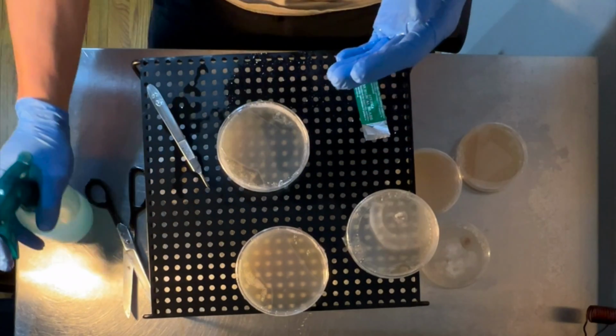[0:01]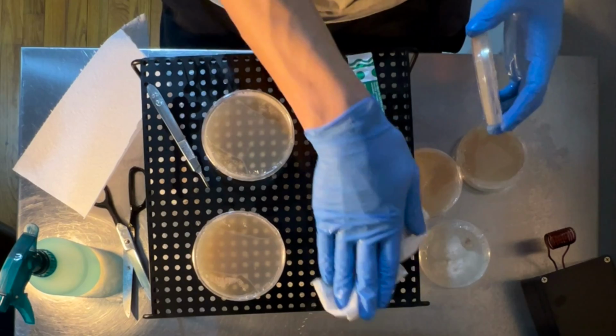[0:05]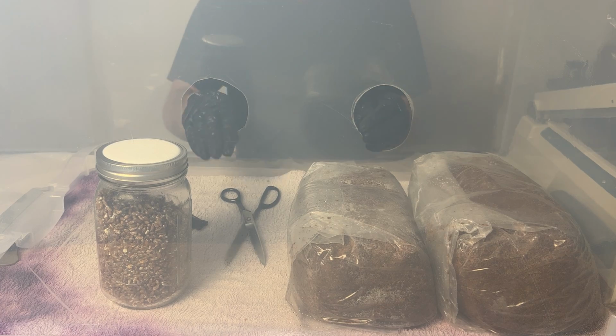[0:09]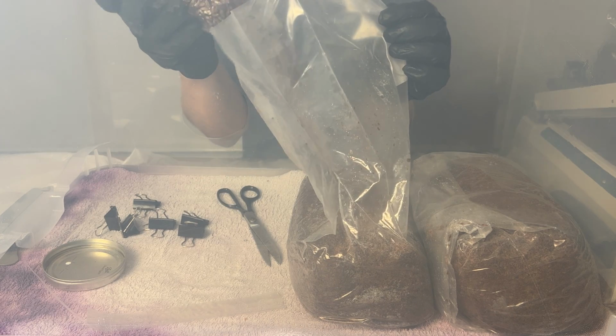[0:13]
One of the biggest challenges in mycology is maintaining a sterile working environment, which is essential to eliminate contamination that could outcompete your mushroom mycelium. Starting out, most people, including myself, use a still air box. This is an effective budget option, and you can accomplish a lot with it.
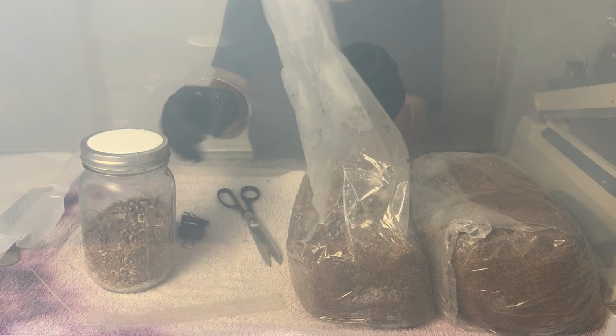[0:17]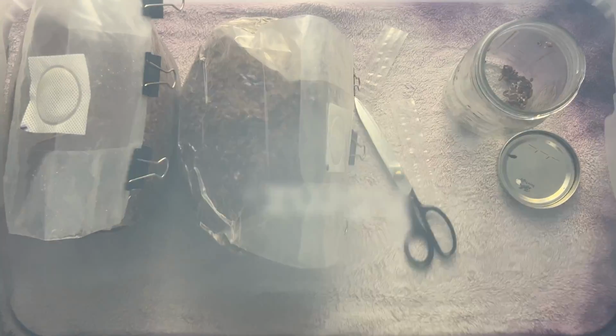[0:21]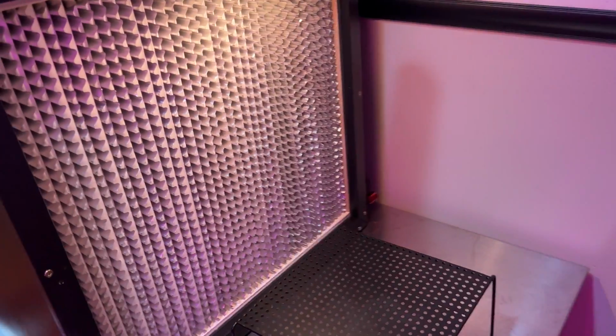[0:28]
But as you progress, it often becomes tedious to set up and use properly, and presents difficulties when working with fruiting blocks and other larger items. Laminar flow hoods, on the other hand, provide a sterile workspace that's much easier to use and can virtually eliminate the possibility of contamination when used properly.
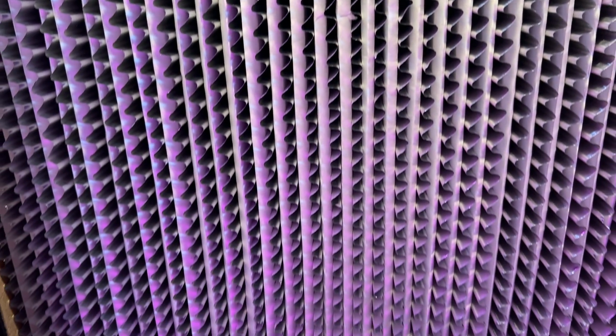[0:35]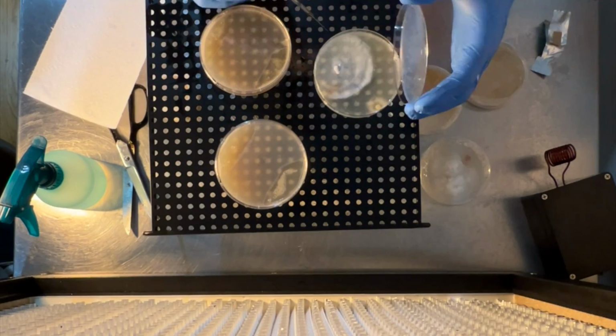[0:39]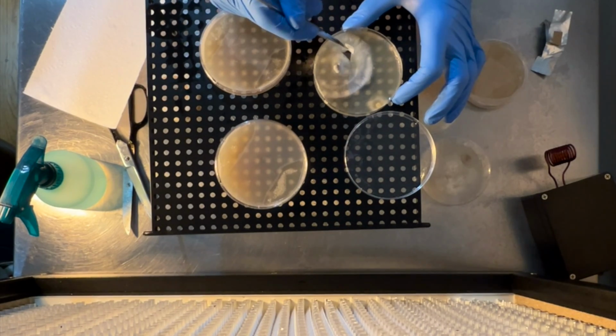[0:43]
A flow hood is basically just a box with a filter built into the front and a fan that blows air into the box and out the filter. When the air is pushed through the filter at just the right speed, it will produce an area of non-turbulent, or laminar, flow in front of the hood. This ensures that no stray particles get swept into your workspace, keeping your work clean.
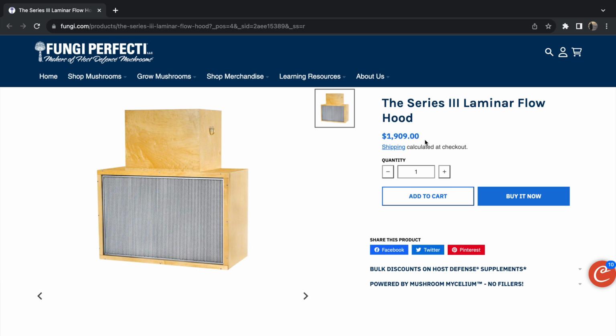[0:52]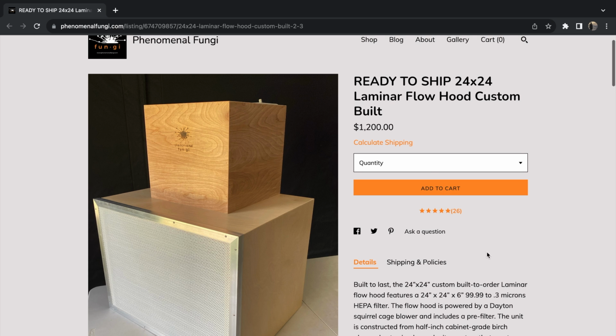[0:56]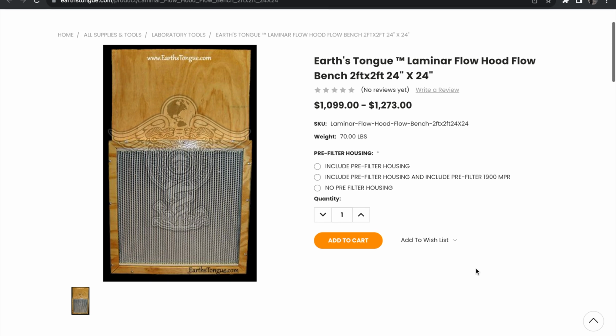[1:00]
The problem is that commercially available flow hoods almost always come with huge price tags, and the ones that are big enough to do anything more than agar work with are often inaccessible to most mushroom growers.
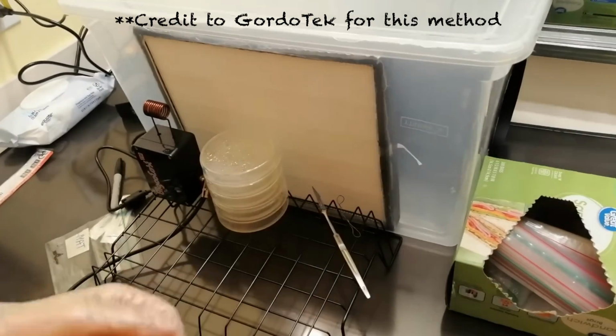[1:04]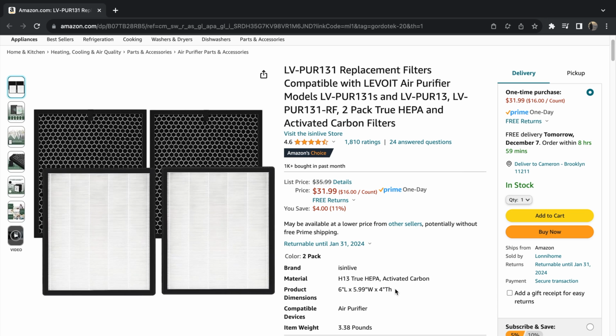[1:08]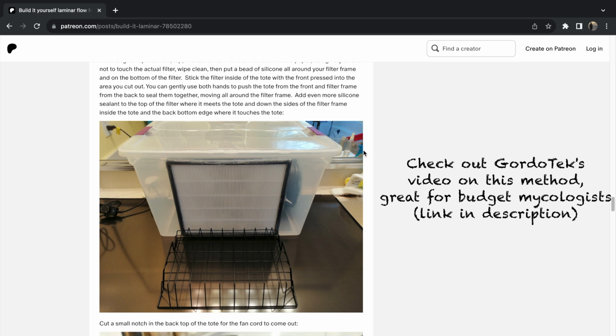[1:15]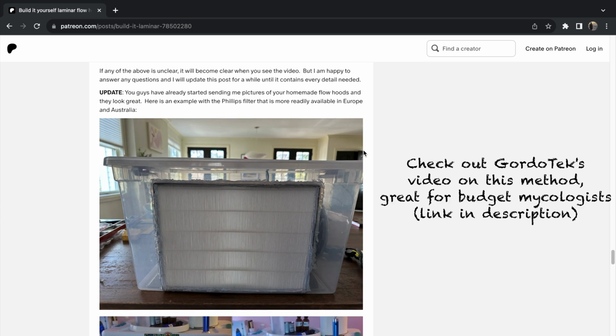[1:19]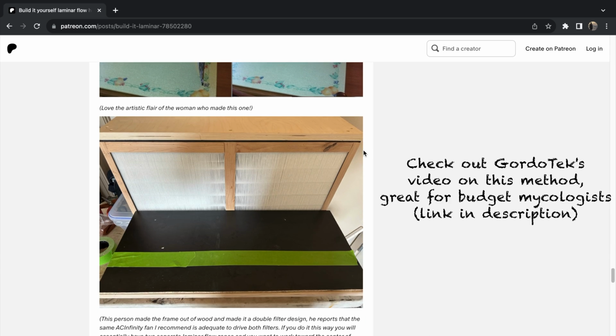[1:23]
It's possible to make a functional flow hood on a tight budget using a plastic tote and a HEPA filter made for an air purifier, but I found that the air filters available to make this option were too small for the size flow hood that I wanted to build, and also wouldn't provide true laminar flow. That being said, true laminar flow isn't strictly necessary for mycology work, just a stream of clean air, so if you're on a tight budget and are okay with a smaller flow hood, this option can work for you.
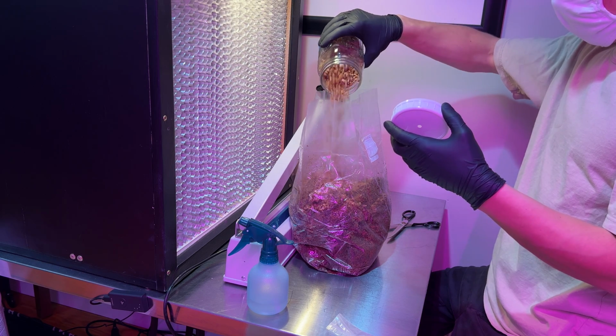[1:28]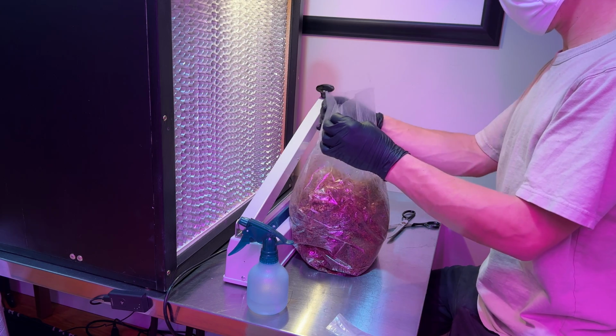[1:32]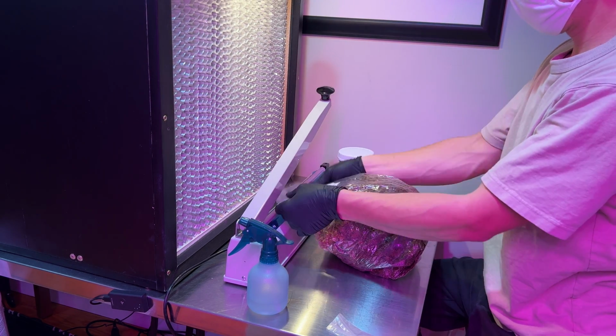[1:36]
If you're looking to work with larger bags and tubs though, it's beneficial to have a larger flow hood that can provide laminar flow. In this video, I'll explain how to design a flow hood from the ground up, including component selection and other considerations, as well as giving you an overview of the build process.
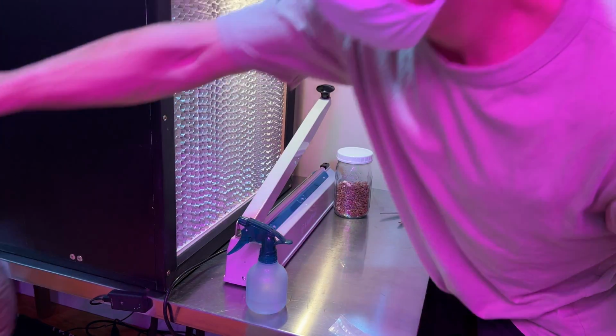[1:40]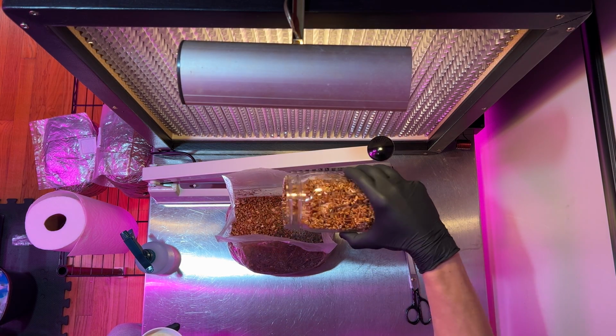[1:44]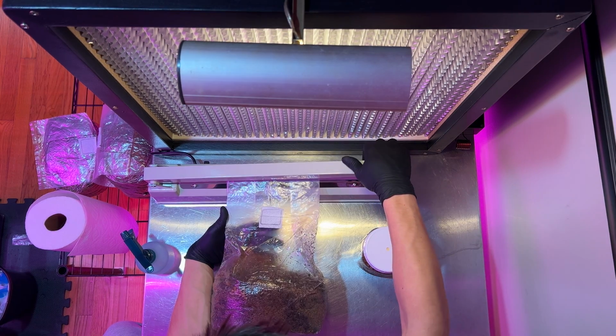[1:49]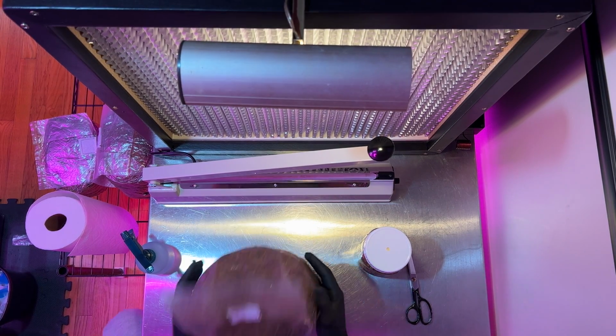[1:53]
My goal is to create a high quality flow hood without sacrificing any performance, so this is by no means a budget option. The cost for this one came to just over $600, which is not cheap by any means, but much more manageable than the $1,000 plus options available for purchase.
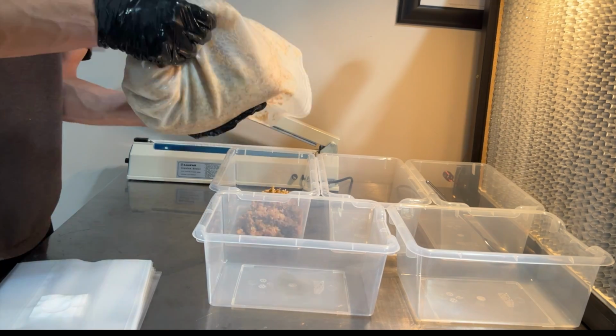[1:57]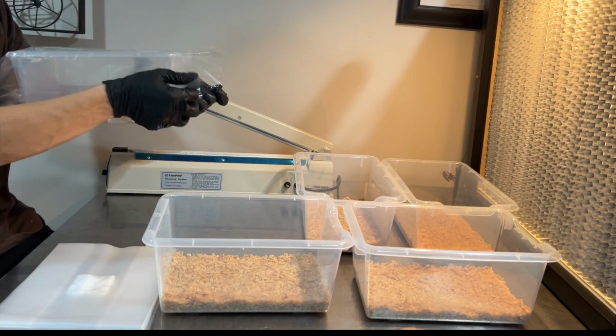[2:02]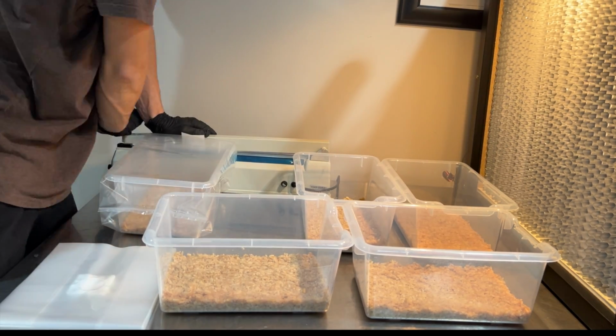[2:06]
Building a flow hood requires a lot of prep work and careful component and material selection to ensure proper operation. So let's start by going over the materials I used. I'll explain how I chose each component throughout the video, so stay tuned for that.
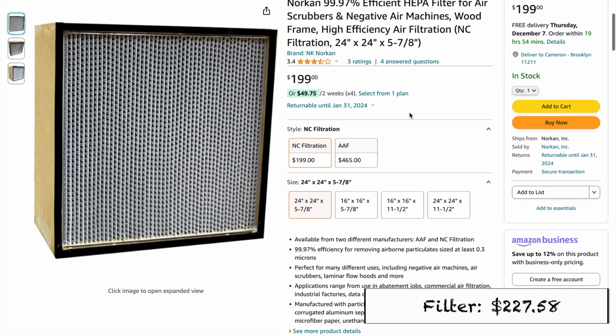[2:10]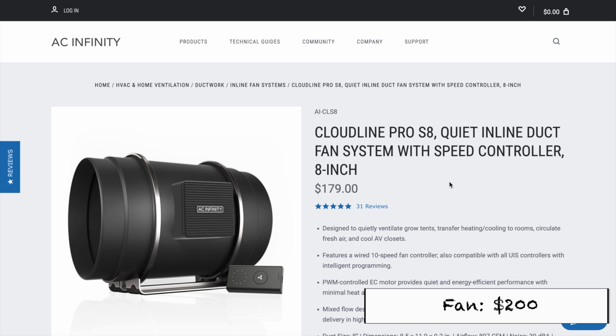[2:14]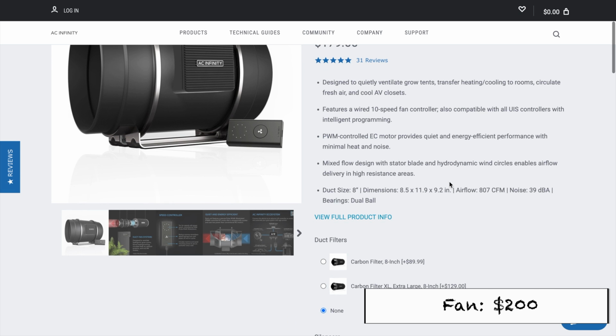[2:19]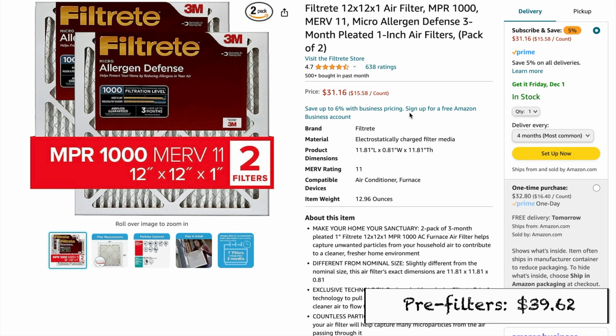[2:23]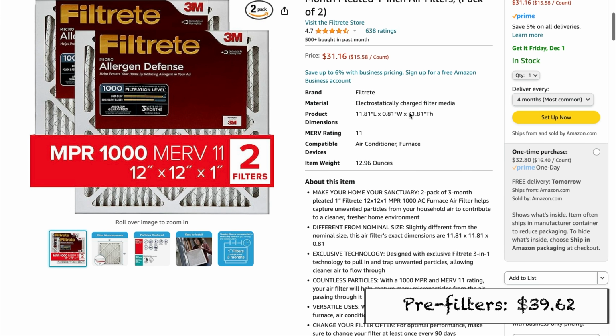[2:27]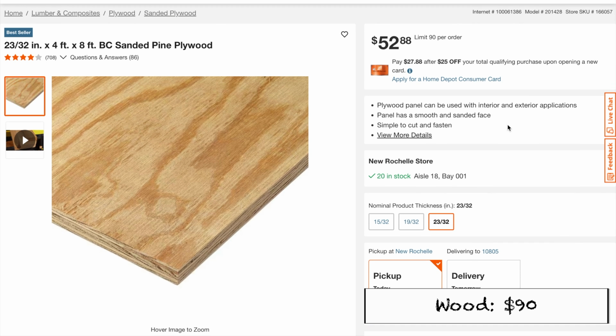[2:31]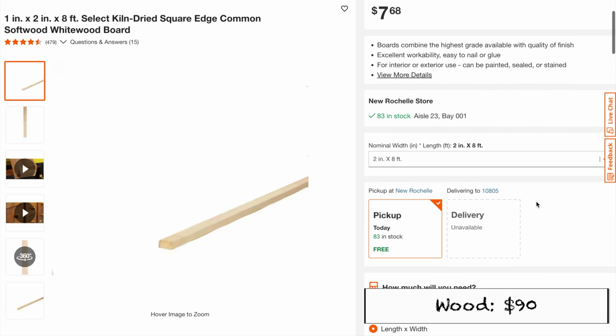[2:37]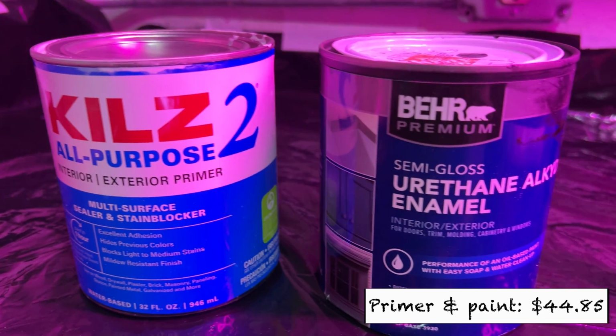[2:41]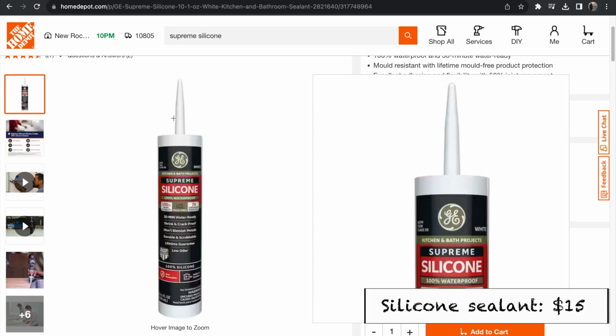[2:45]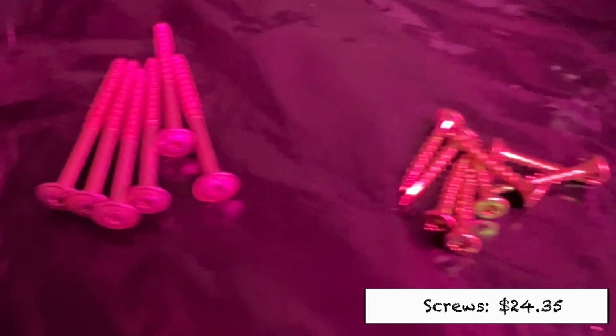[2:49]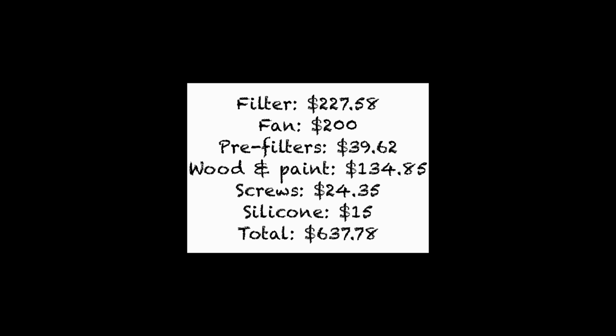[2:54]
To construct the box that houses the filter and fan, I purchased a 4x8 foot sheet of 23/32 of an inch sanded pine plywood, as well as 3 1x2 inch pine furring strips. While I was at the hardware store, I also picked up some wood primer and gloss paint, some silicone sealant to seal any cracks in the box, 2 inch cabinetry screws to fasten the plywood together, and 1 1/4 inch screws to attach the furring strips. This brought the total for materials to $637.78, which includes an extra pre-filter.
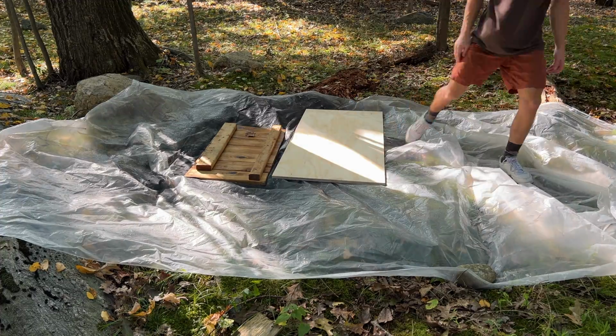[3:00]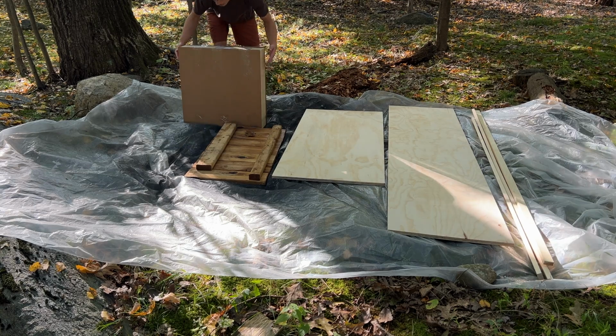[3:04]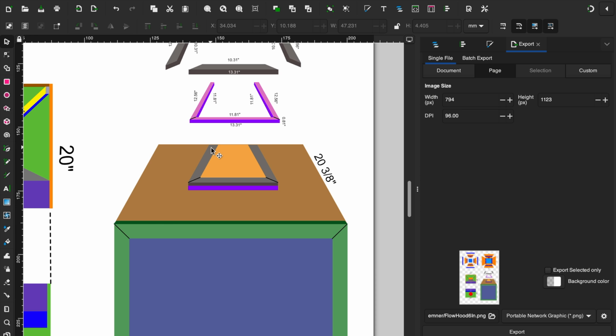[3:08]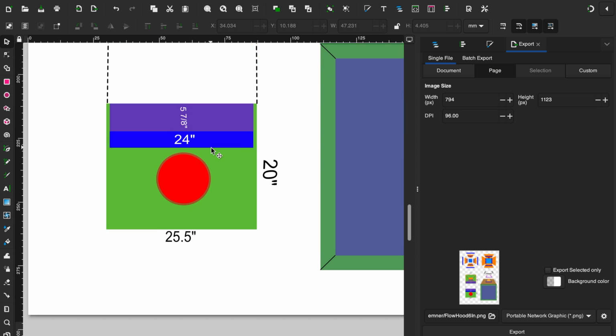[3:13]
So with the materials secured, let's roll the construction footage while I talk about how I landed on each component. I'm not going to go into too much detail about the nitty-gritty construction because it will vary based on the design you choose, but if you're interested, I'll have the detailed plans I made for this project in the description, which you can use as a reference for your build.
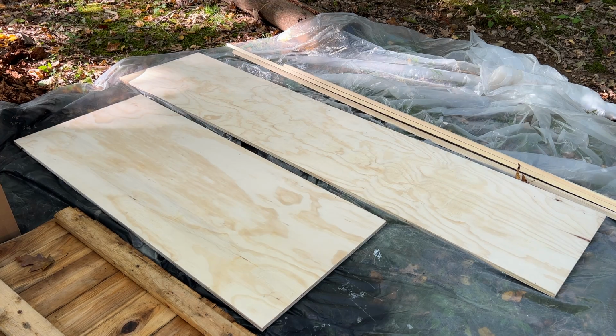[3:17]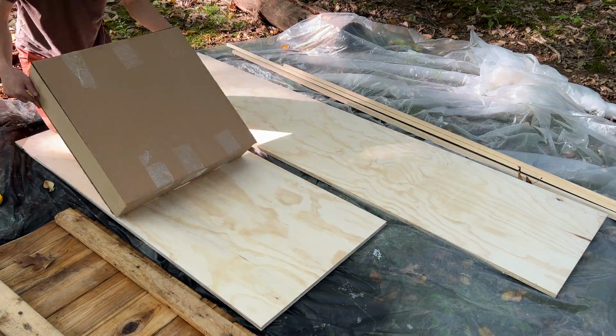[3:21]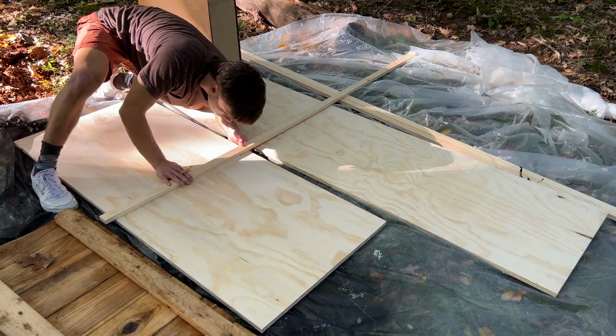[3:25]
I'm starting out by cutting my plywood and furring strips to size. All these pieces are designed to snugly fit my 2x2 foot filter, so your measurements will vary based on the filter size you choose.
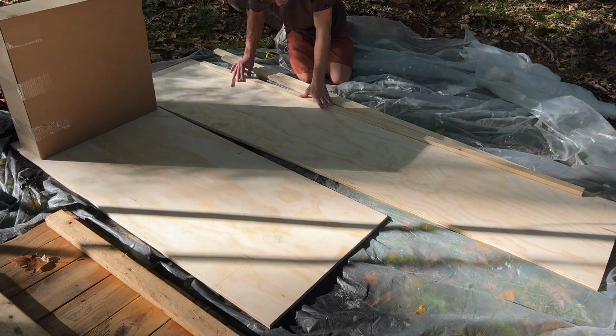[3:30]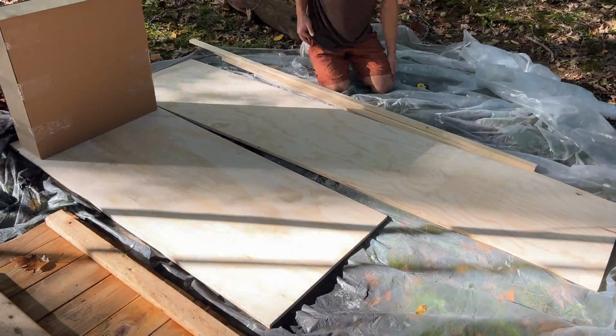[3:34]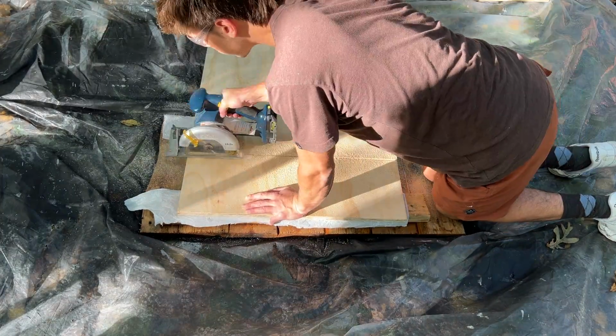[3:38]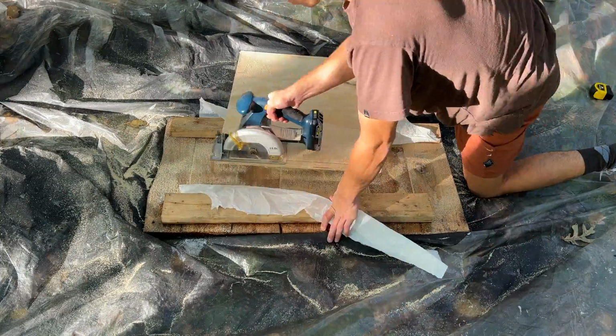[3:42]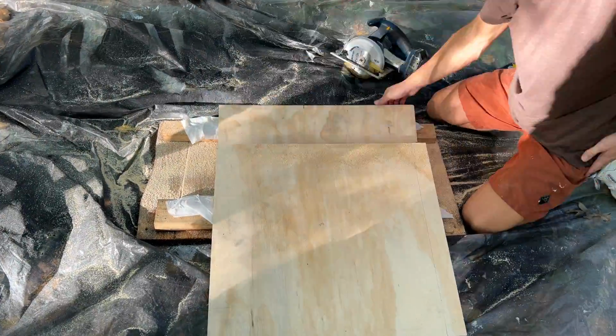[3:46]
If you're going to go through the effort of building a flow hood this way, I'd recommend making it at least 2 feet by 2 feet, as this is big enough to do most mycology work, including making fruiting blocks and larger mono tubs. 2x4 foot is another common option, and would provide an even bigger working area, but will require a more powerful fan and cost more. 2x2 ended up being perfect for my application, and also offered cost and space savings over the 2x4 foot build.
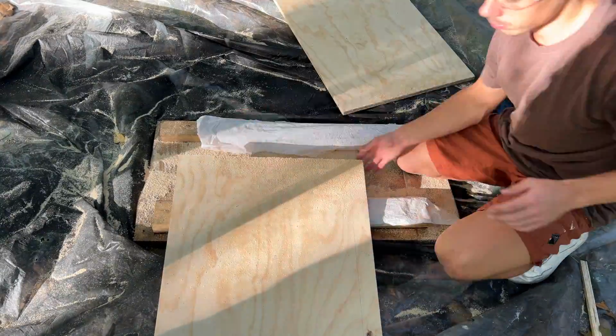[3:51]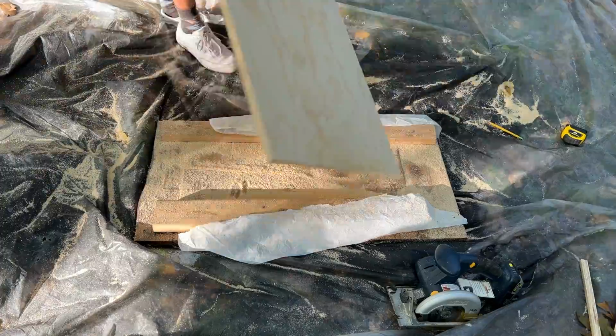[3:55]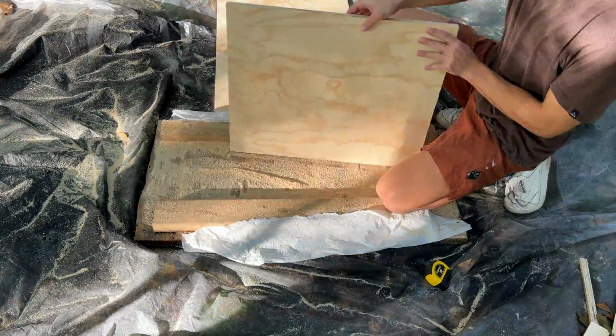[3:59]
In order for the flow hood to operate correctly, you need to ensure that the HEPA filter and fan are compatible. We need the air coming out of the filter to be moving at 100 feet per minute in order to achieve laminar flow, and making this happen requires a bit of due diligence.
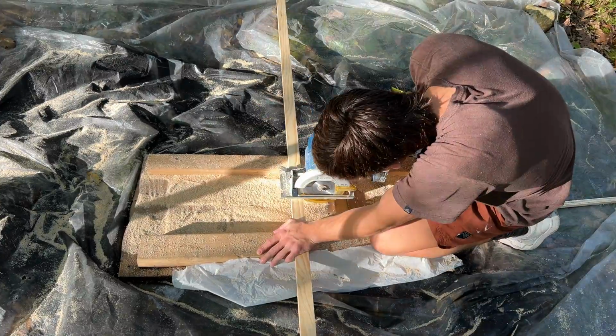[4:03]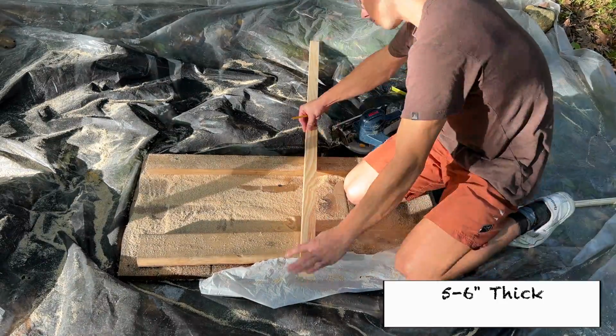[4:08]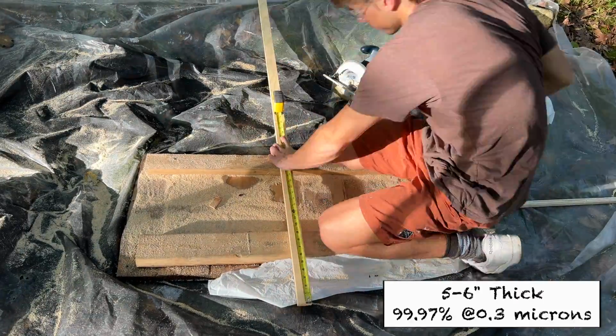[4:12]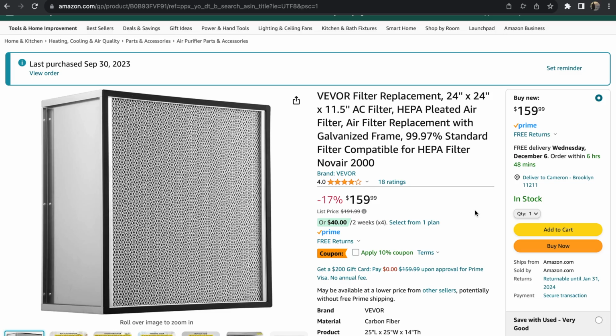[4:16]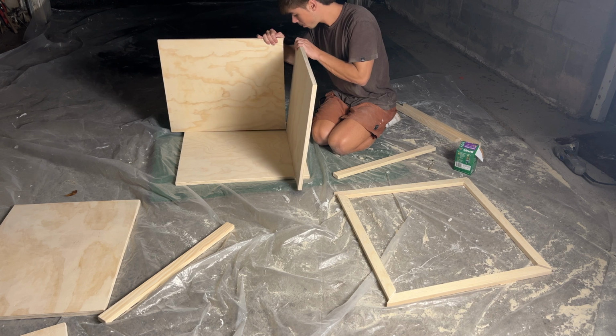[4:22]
The HEPA filter is the first thing you'll want to purchase. I'd recommend choosing one that is 5 to 6 inches thick and has a filtration efficiency of at least 99.97% down to 0.3 microns. You'll likely come across filters that are 11 inches thick, and while these can work, they're designed to scrub the air in industrial settings and aren't as good at producing laminar flow in these kinds of flow hoods.
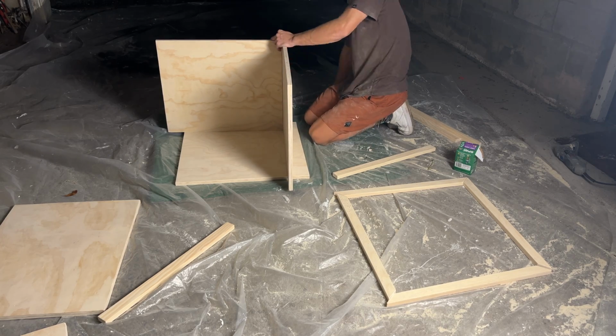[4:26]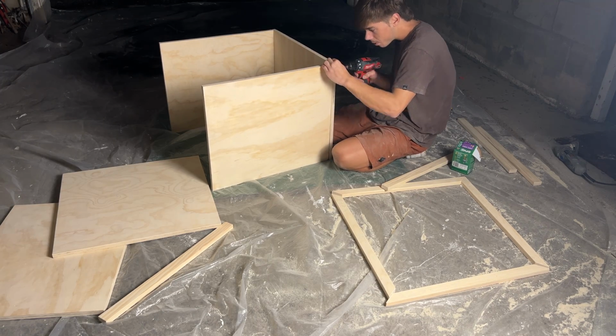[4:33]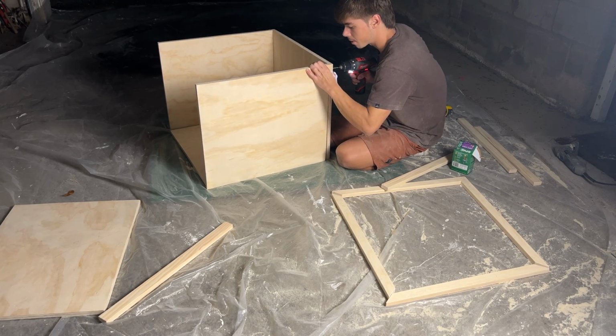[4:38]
Next, you'll want to look at fans, and the main thing here is that it needs to be able to put out the correct airflow through your filter. Because air filters have resistance as the air passes through them, the pressure inside your flow hood will be greater than the ambient room pressure. Since the fan will need to work harder to blow air into the pressurized interior of the hood, we need to account for this pressure drop when choosing which one to get.
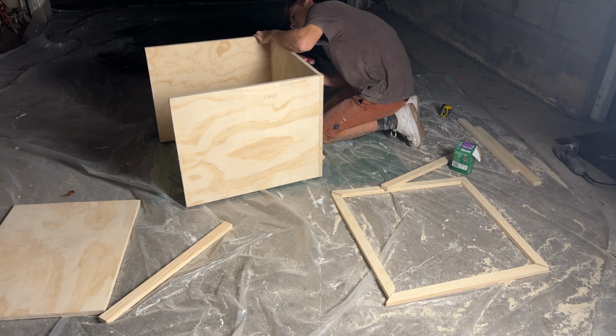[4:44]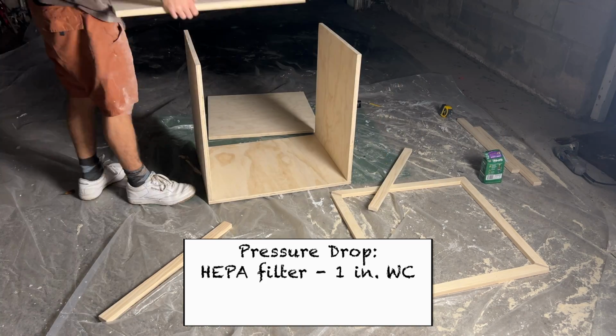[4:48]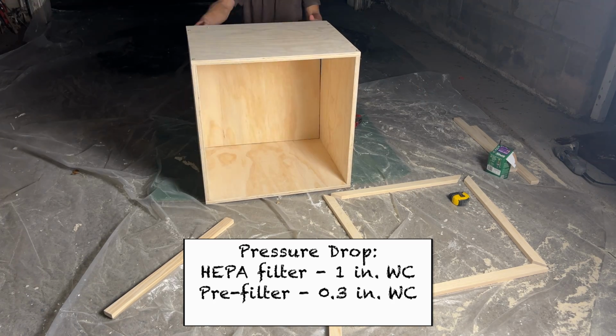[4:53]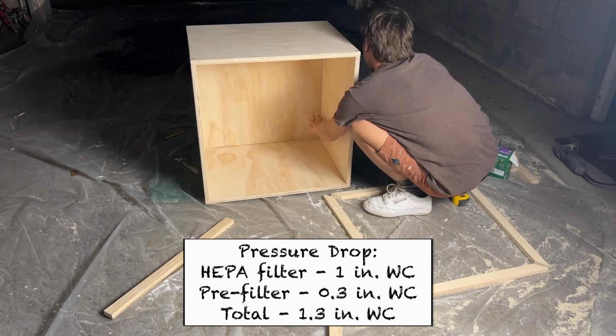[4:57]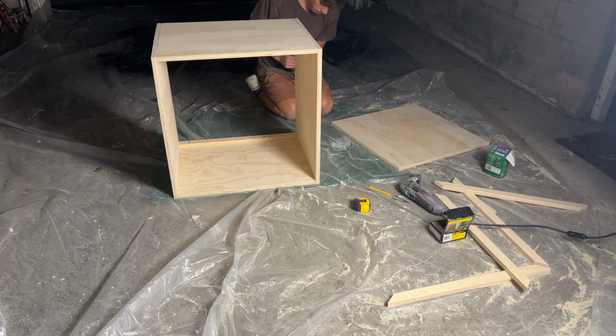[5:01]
Most filters specify the pressure drop on the packaging, but if yours doesn't, this type of 6-inch HEPA filter usually sits at around 1 inch of water. I'm also going to add another 0.2 to 0.3 inches of water to my calculation for the total pressure drop of the flow hood to account for the pre-filter. All in, the HEPA and pre-filter will produce a pressure drop of around 1.3 inches of water.
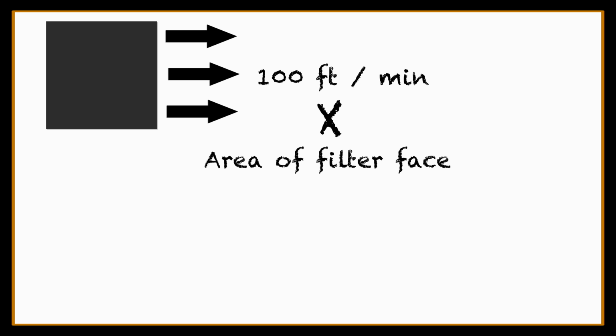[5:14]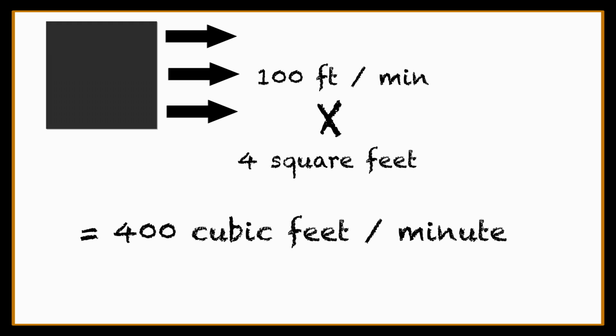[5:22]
This is a conservative estimate, and if you're using similar components, going off this number will probably work for you too. To calculate the airflow rate that our fan has to be able to maintain at 1.3 inches of water, we simply take the desired 100 feet per minute and multiply it by the area of our HEPA filter. My 2 foot by 2 foot filter is 4 square feet, so we simply multiply 100 feet per minute by 4 square feet to get our required airflow of 400 cubic feet per minute. Armed with this knowledge, we can start looking at fans.
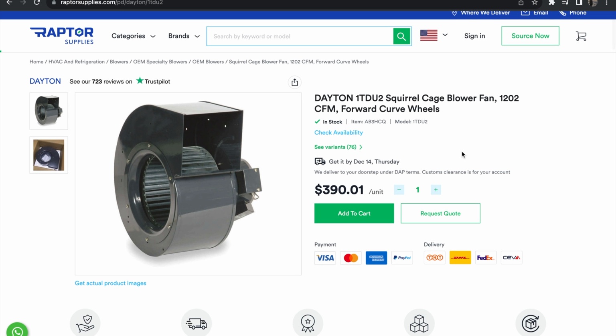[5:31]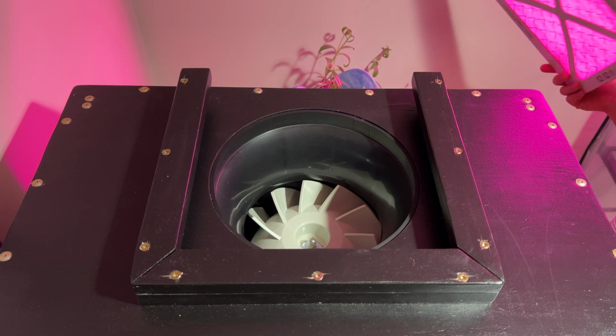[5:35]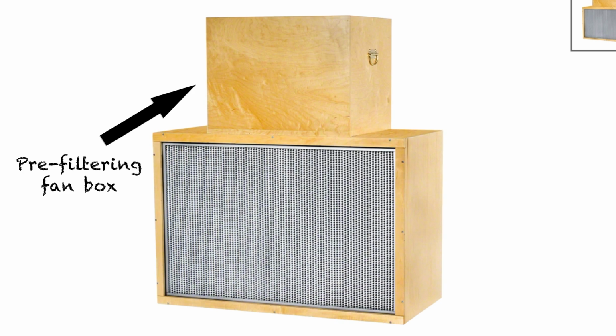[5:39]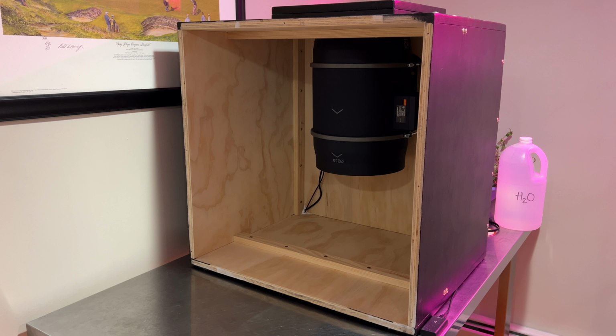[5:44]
A lot of people use blower fans for this purpose, but in this build I'm going to be using an inline fan. This allows me to house the fan inside of the flow hood itself, saving space and eliminating the need for a fan box, which is generally constructed around blower style fans to allow for pre-filtering. One thing to keep in mind when using an inline fan is that the plenum, or empty space in the flow hood behind the filter, must be made big enough to allow for an even distribution of pressure across the face of the filter.
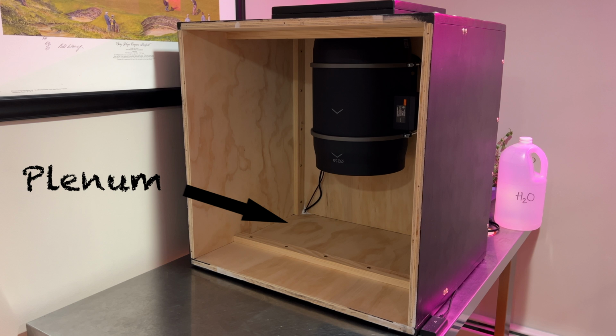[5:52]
The easiest way to determine if a fan is powerful enough is to use its fan curve. This is a graph that shows the airflow that the fan can produce at different pressures, which makes it very easy to see if we can move enough CFM at your pressure. Here, for example, we find our pressure on the y-axis, and then we go across until we meet the curve and see that this fan can make around 200 CFM at 1.3 inches of water. Since this is less than the airflow we need, we know that this fan wouldn't work.
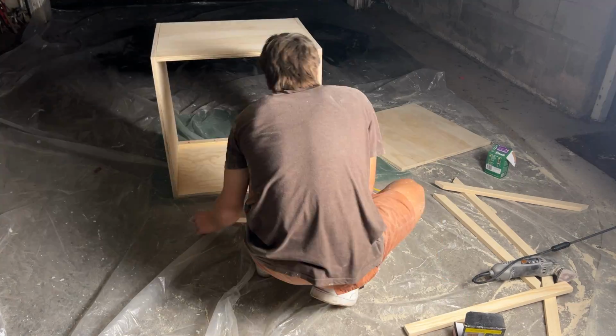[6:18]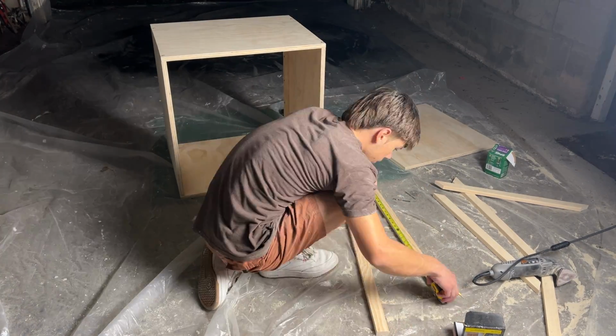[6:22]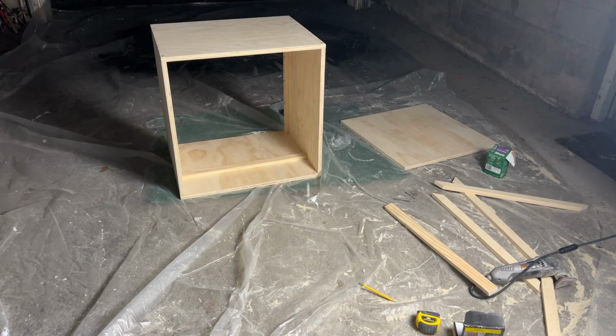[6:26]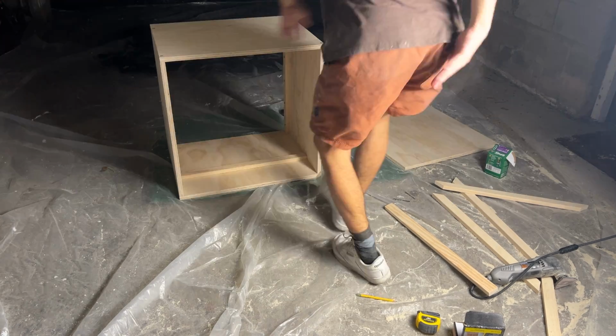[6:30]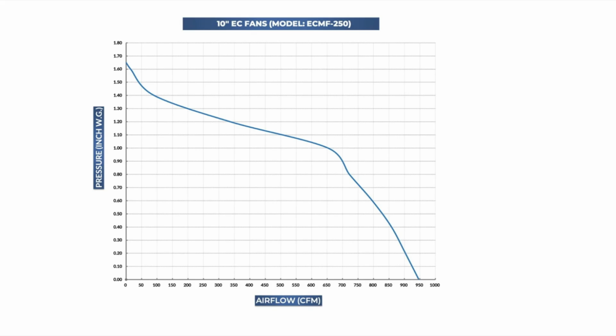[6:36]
Most inline fans that I looked at didn't come with a fan curve, so I had to do some deduction to see if they'd work. What they will usually disclose is the maximum CFM and the static pressure. The max CFM is the maximum airflow that the fan can produce under no pressure, and the static pressure is the pressure at which the airflow of the fan goes to zero. Conveniently, these values are equivalent to the two endpoints on a fan curve, and by comparing them to fan curves of similar fans, we can get a reasonable estimate of whether the fan will work.
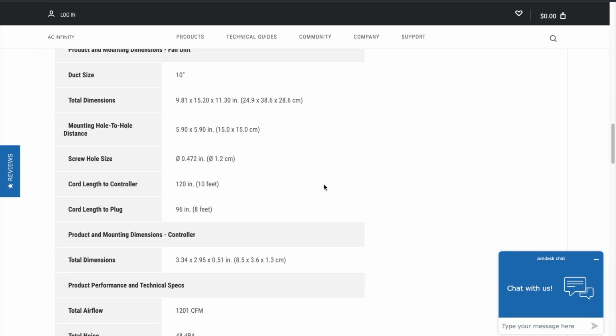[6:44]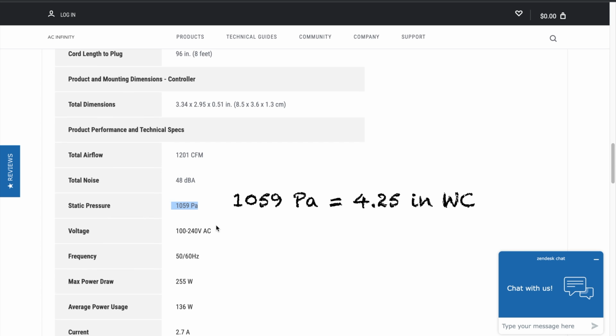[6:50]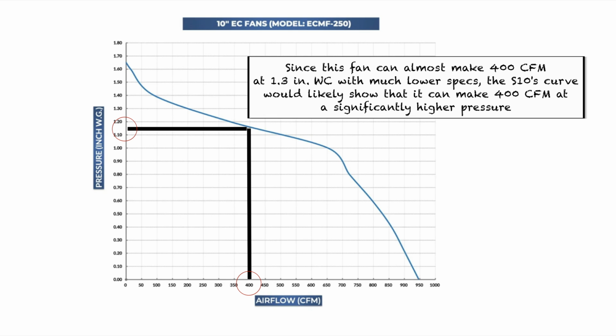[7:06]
My Cloudline S10 fan has a max airflow of 1201 CFM and a static pressure of 4.25 inches of water. Going back to our sample fan curve, which is for a similar inline style fan, we can see that if we go to our required 400 CFM, we meet the curve at around 1.1 inches of water. Considering that this curve is for a fan with a static pressure of 1.65 inches of water and a max airflow of 950 CFM, we can safely assume that the S10 would be able to far exceed the 400 CFM we need at 1.3 inches of water, given its specs.
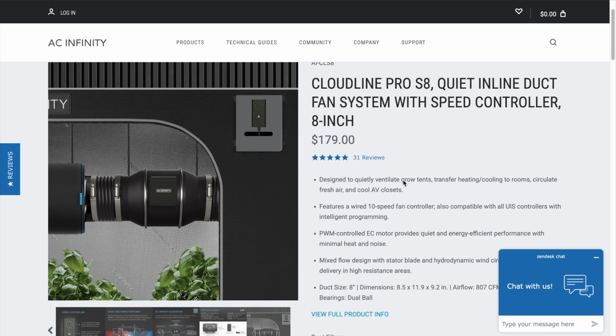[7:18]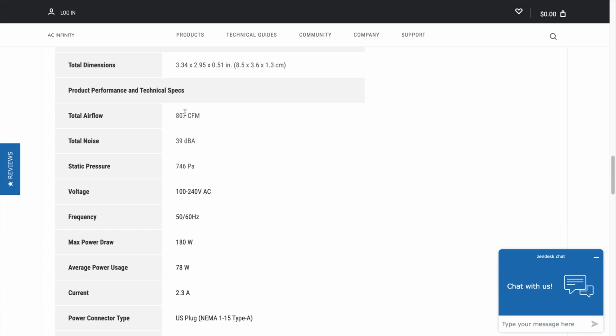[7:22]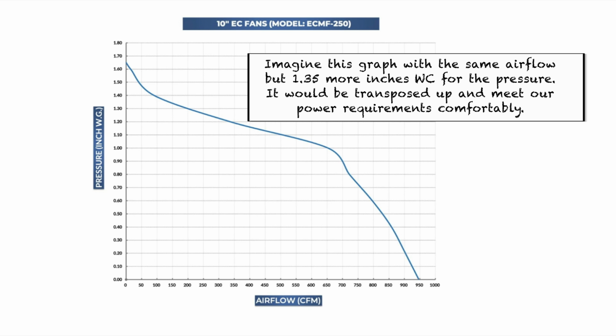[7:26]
This fan is probably overkill for this build, and I only got it because I found it for cheaper than the S8 model, which I would have gotten otherwise. The S8 has a max airflow of 807 CFM and a static pressure of 3 inches of water. And given its much higher static pressure and comparable max airflow to our sample fan curve, it would also be able to comfortably make 400 CFM at 1.3 inches of water.
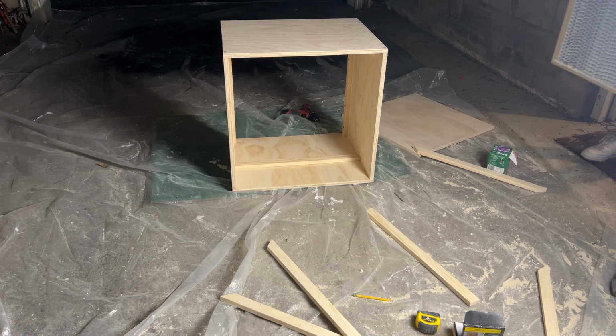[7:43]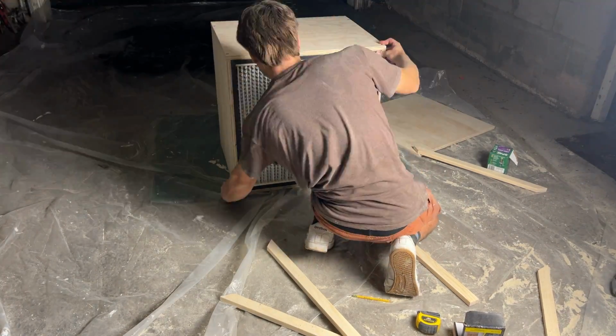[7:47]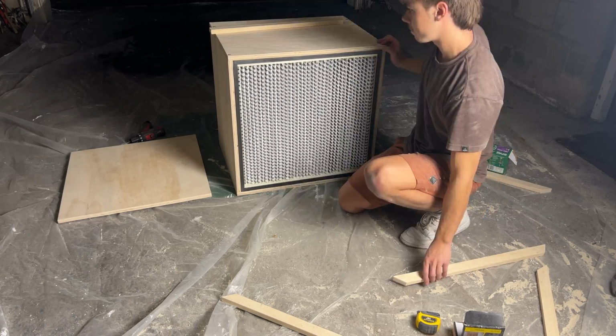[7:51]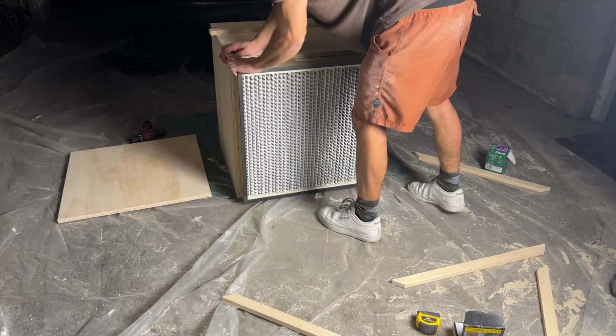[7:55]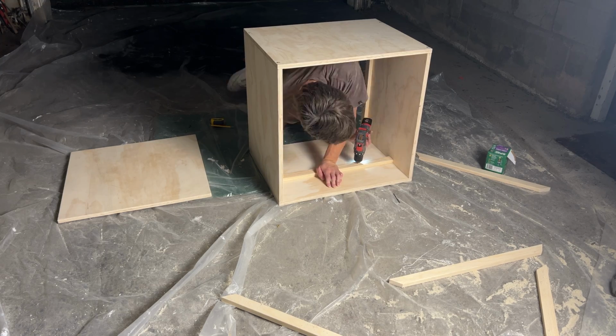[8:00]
This isn't a perfect way to determine fan compatibility, since fan curves don't necessarily transpose as simply as this, but I think it's good enough to get a rough idea of whether a fan will work or not. Because these inline fans are variable speed, which I consider a requirement for flow hood fans, we have some leeway in the power calculations and don't have to worry if we overshoot our required power. Another reason to get a variable speed fan is that the static pressure of a flow hood tends to increase over time as particles collect in the HEPA filter, and you may need to increase the speed setting on the fan over time to account for this.
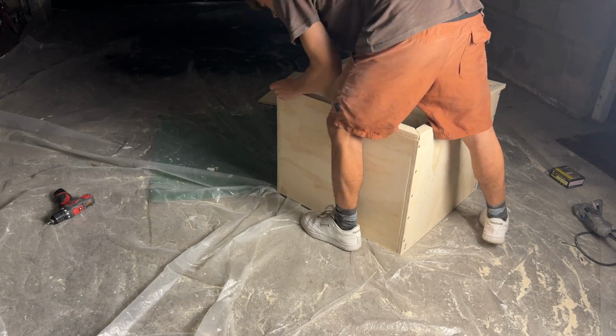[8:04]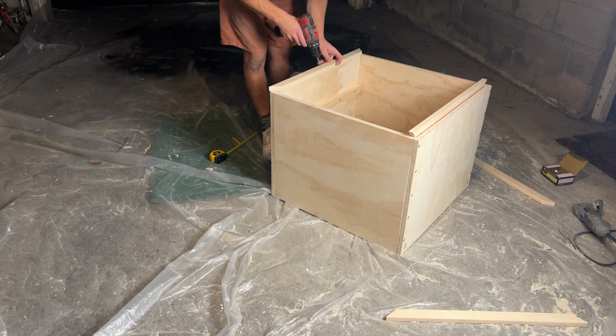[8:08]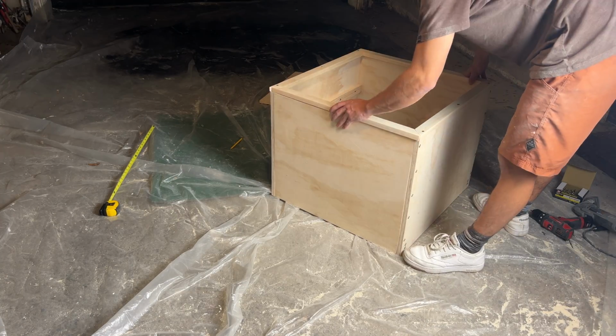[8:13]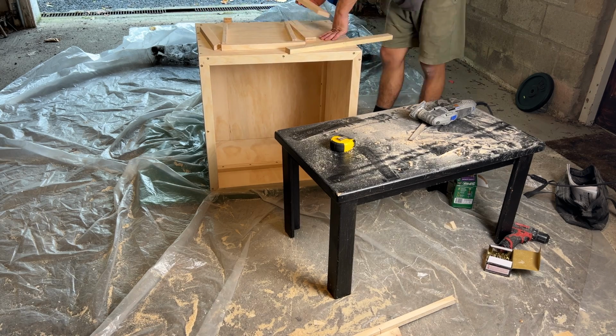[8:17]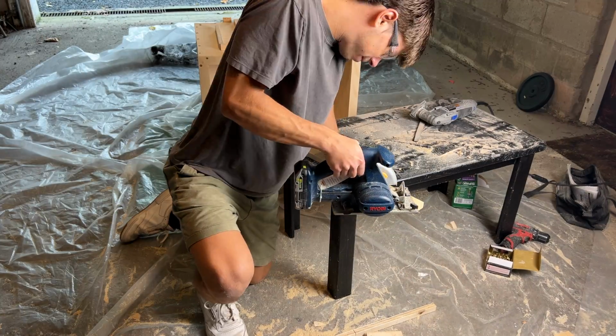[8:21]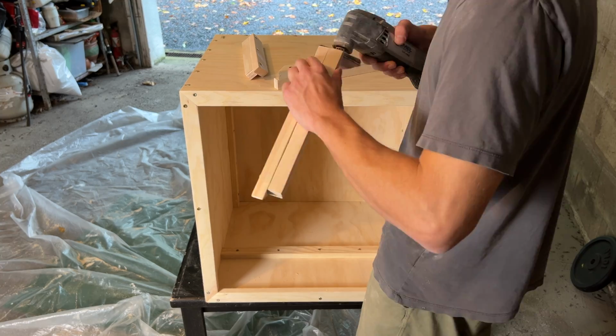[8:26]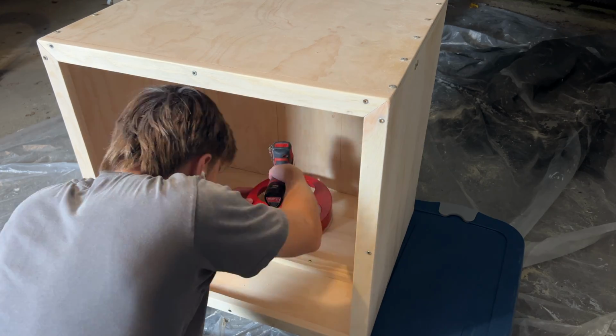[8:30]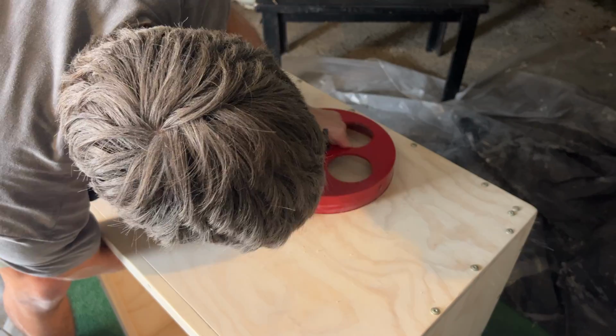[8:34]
I settled on 23/32 of an inch sanded ply for my box because it's easy to construct into an airtight structure and thick enough to absorb the vibrations of the fan. There are other materials you could use, but just make sure you choose something durable and easy to work with. The 1x2-inch pine furring strips I picked up will be used to construct a filter stop, which will keep the filter in place, as well as to reinforce my box, construct my pre-filter housing, and as the front trim for the box. Purchasing a hole saw that fits the diameter of your fan is hugely helpful for making a hole for it to sit in, but you can also just use a jigsaw for this job.
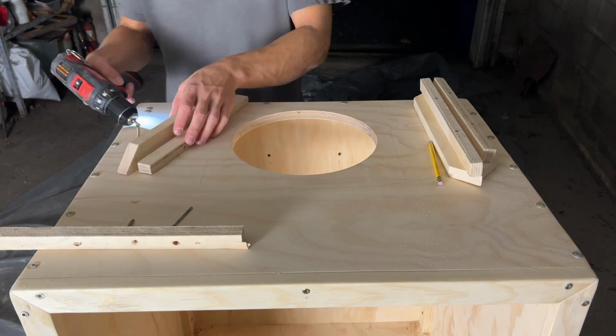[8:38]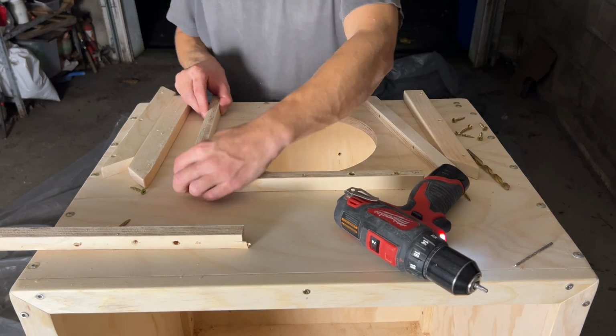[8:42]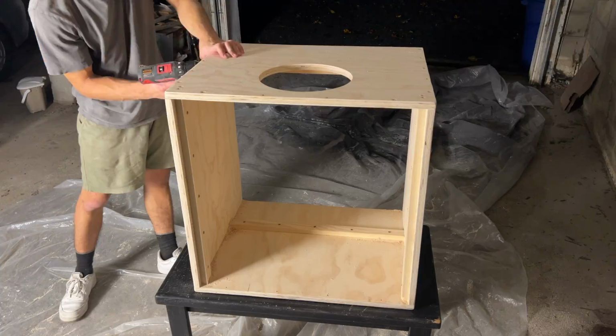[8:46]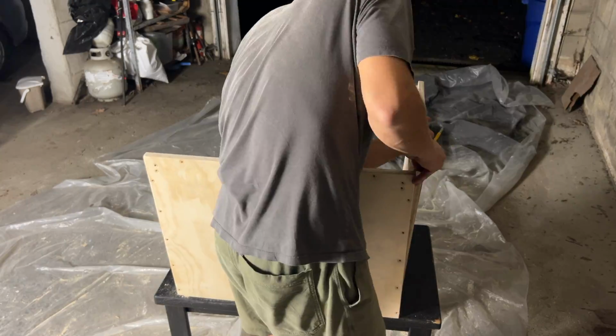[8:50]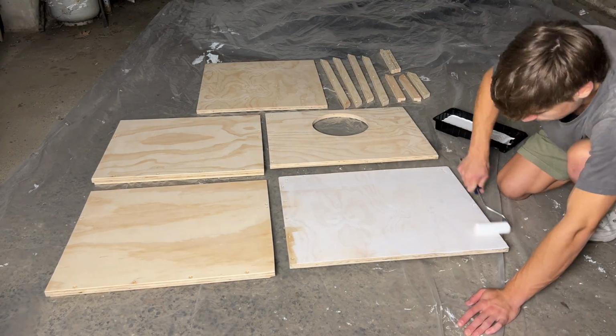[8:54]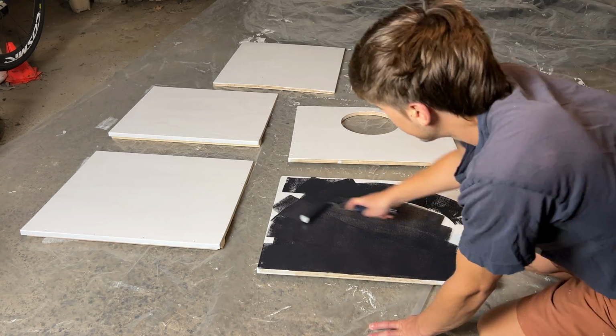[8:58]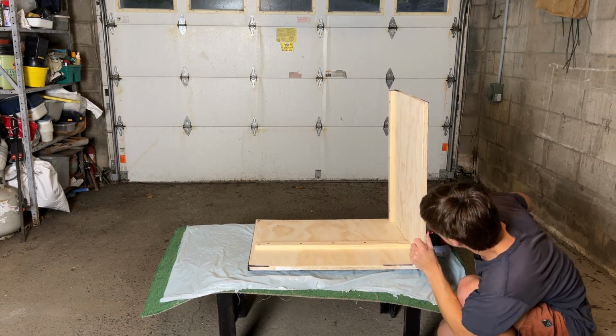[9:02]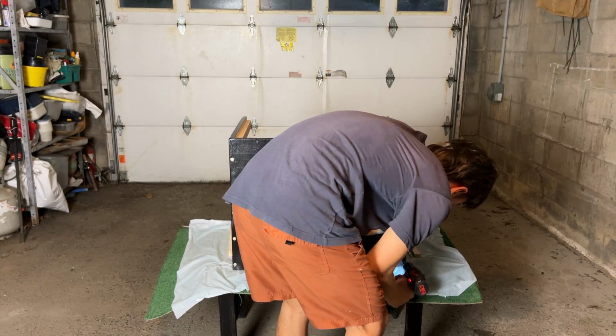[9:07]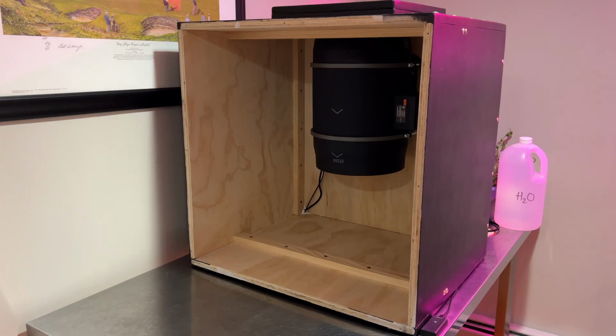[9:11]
For aesthetic purposes, although I do think it made the final product look a lot more professional. Gloss paint is much easier to clean than raw wood, and will also provide a somewhat water-resistant barrier preventing mold from growing in the wood. I was originally planning on sealing all the inside edges of the box with silicone, but it ended up being pretty much airtight without it, so I only used it to seal the notch where the wires come out of the box.
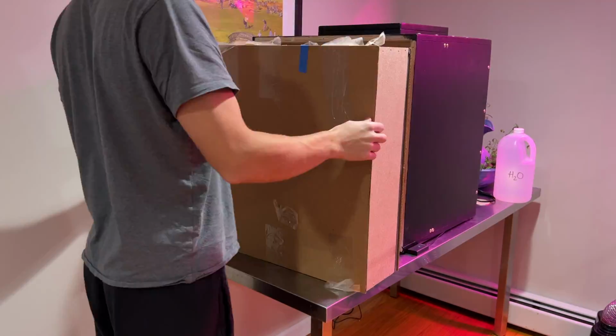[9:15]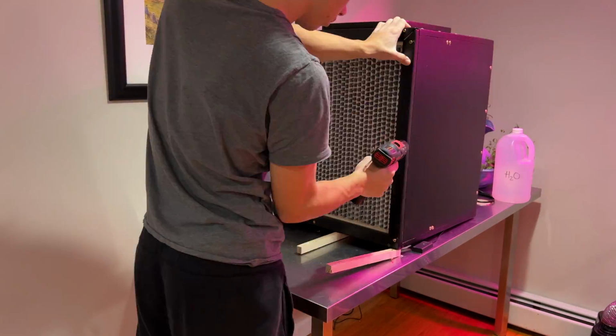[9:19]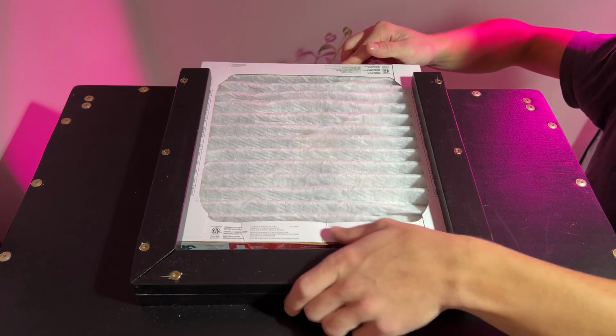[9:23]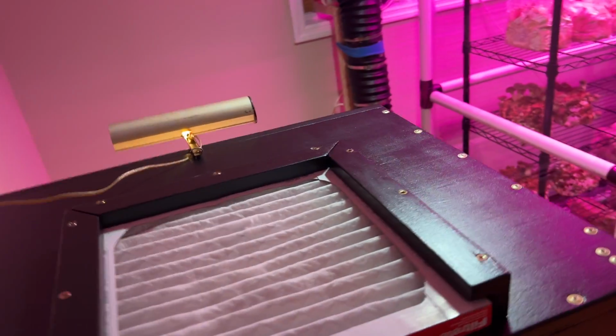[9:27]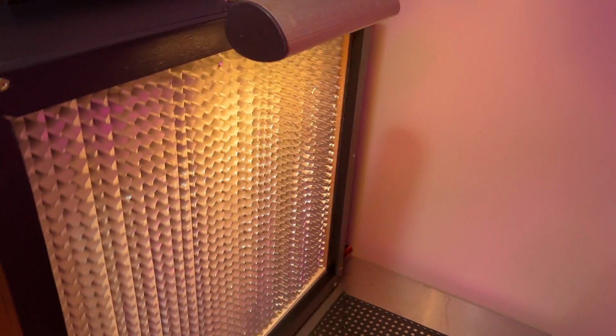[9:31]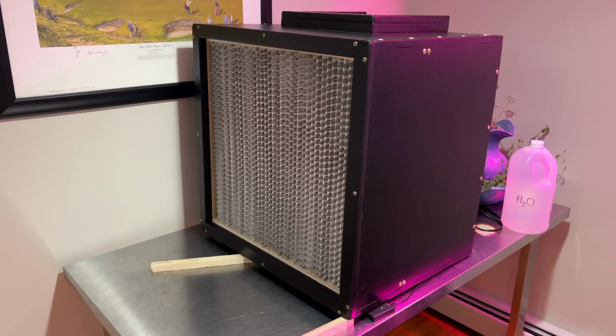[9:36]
That's the flow hood built.
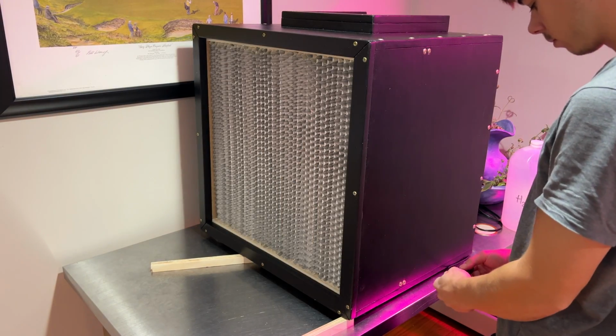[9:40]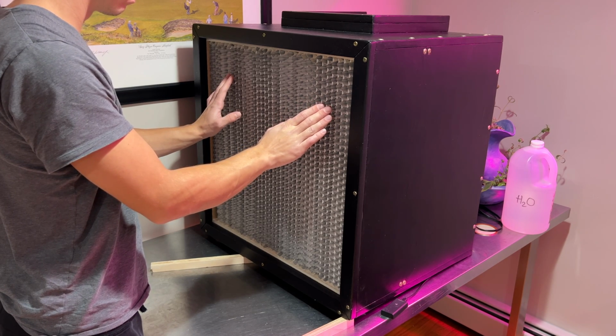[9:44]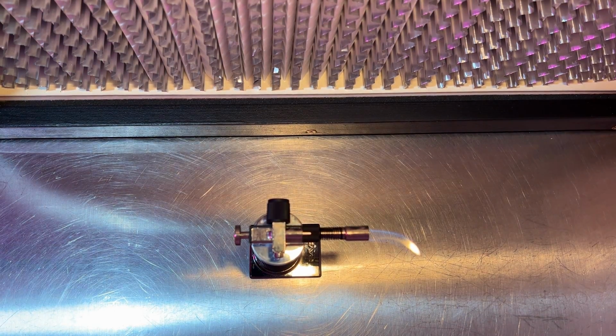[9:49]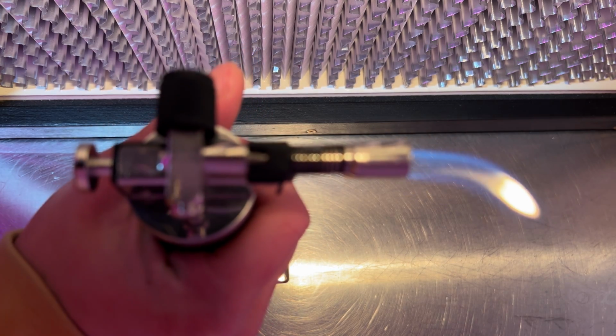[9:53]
Now we need to calibrate the fan speed to make sure we get laminar flow. If you have an anemometer, you can easily use it to find the fan setting that gives you 100 feet per minute of flow. But if you don't, you can just hold a lighter in front of your hood and adjust your fan until the flame is blown at about a 45 degree angle from 6 inches away.
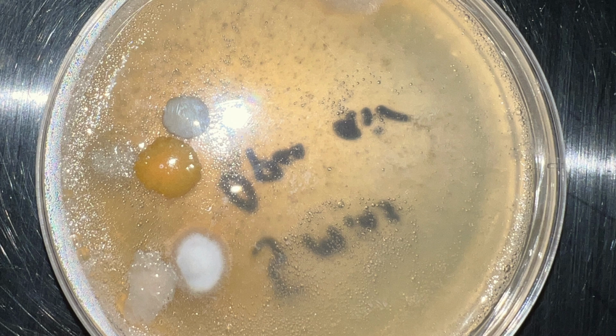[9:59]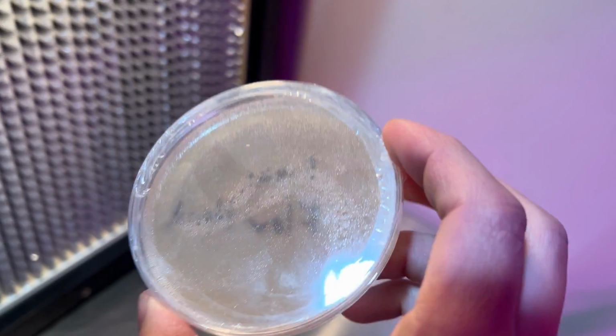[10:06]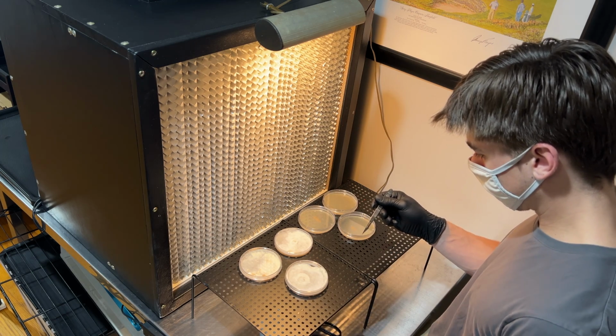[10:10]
I ran a test where I left two petri dishes open for 5 minutes, one in front of the hood and one not. The dish that wasn't in front of the hood developed lots of bacteria and mold within a week, as expected. But a month later, there are still no signs of contamination in the dish that was in front of the hood. This hood has made my mycological work so much easier, and I highly recommend anyone who wants to take their mushroom obsession to the next level to build one.
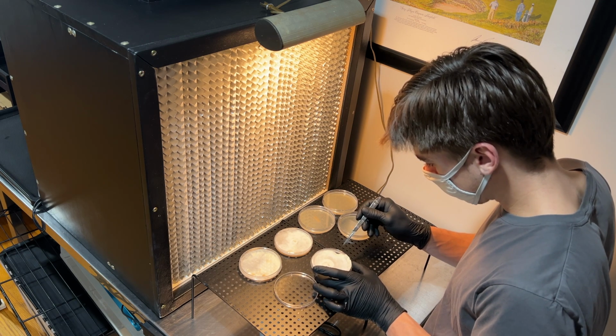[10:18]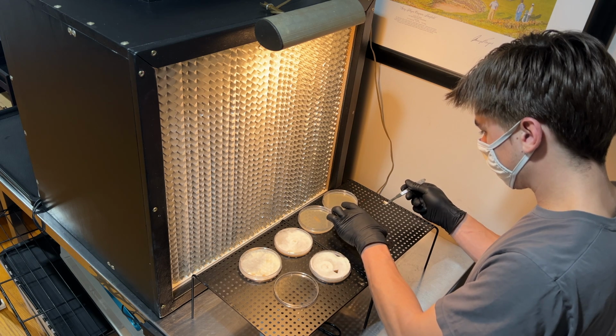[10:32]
I learned a ton from this build and made a lot of mistakes, but I'm thrilled with how it came out, and so far I've had no contamination whatsoever when working in front of it. There's a lot of information out there about flow hoods, some helpful and some not. I hope this video gives you a good idea of how to build one for mushroom cultivation, should you decide to embark on this journey yourself.